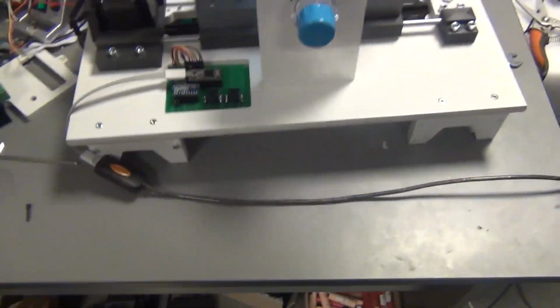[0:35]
Hey guys, a quick update on the ventilator project that I'm working on with my colleague Mihai. We made quite some progress and we managed to make this system more stable, and I will show you what I did, and I also uploaded the files on GitHub. We changed a few things on the hardware side and on the software. And yeah, let me show you what we did.
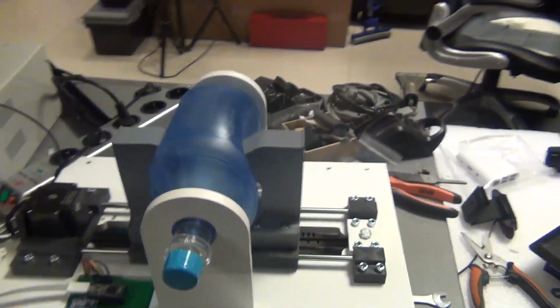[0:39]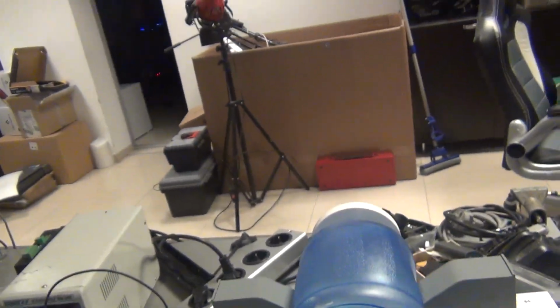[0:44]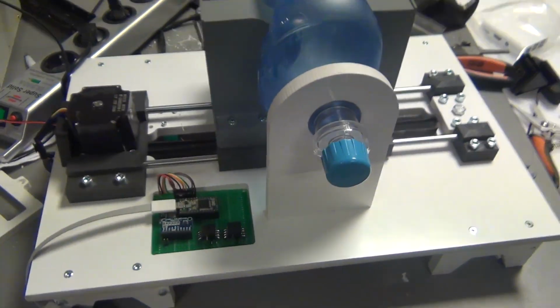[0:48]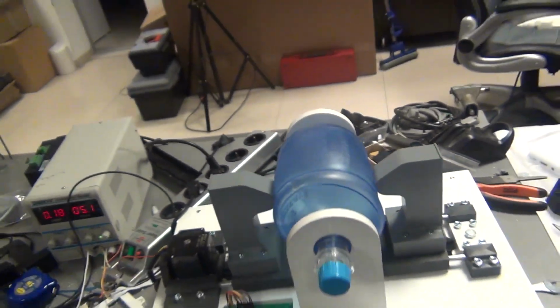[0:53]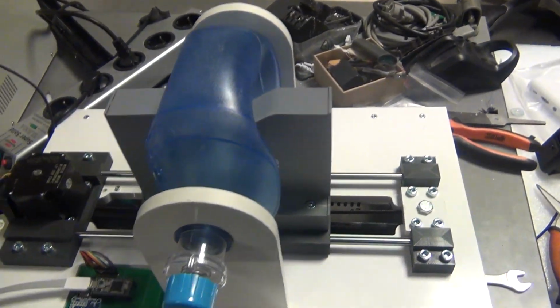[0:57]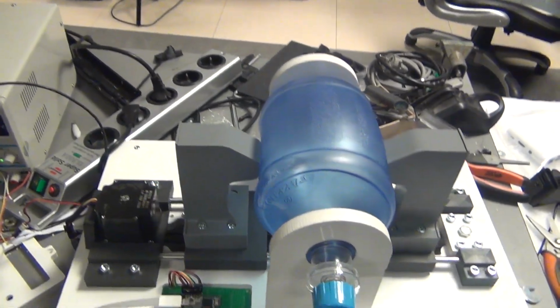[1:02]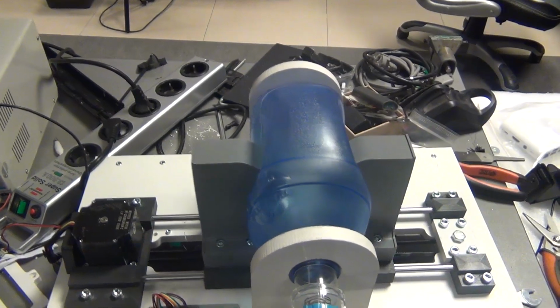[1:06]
So after posting the project, I got some requests that we should make the hardware two-part control. So we have the controller, and then we'll have an API, similar to what we did in a different project, having it controlled by API. And no matter what happens with the user interface, the machine should still go on.
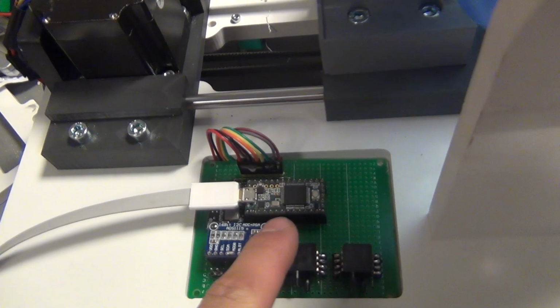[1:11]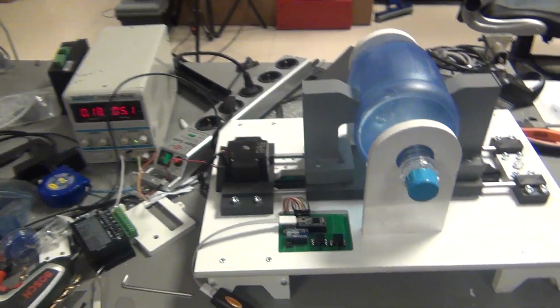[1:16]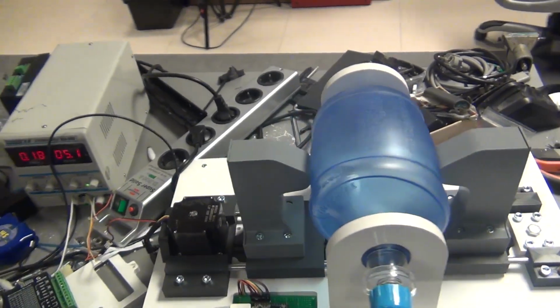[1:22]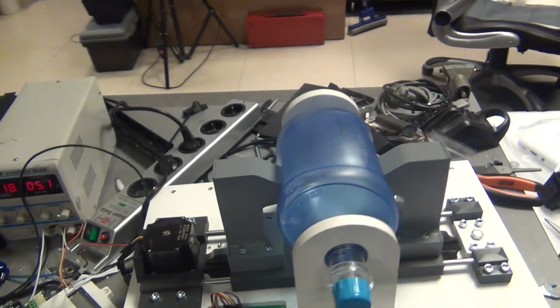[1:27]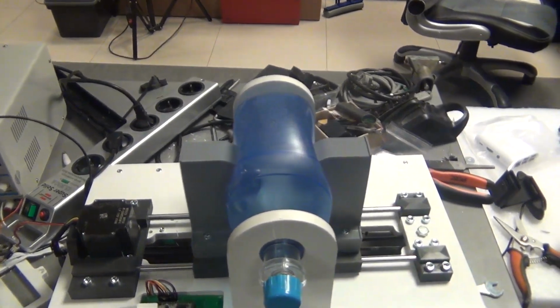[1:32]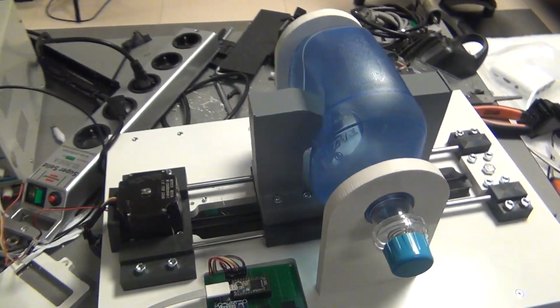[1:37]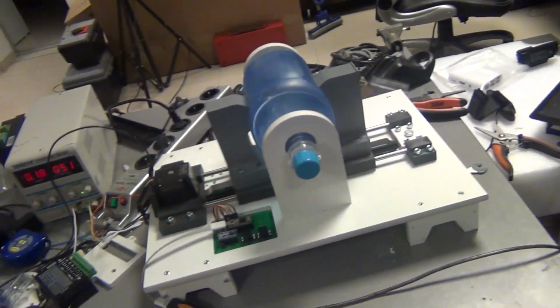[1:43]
So we changed from the Arduino Nano to a Teensy 3.2 board. It's a bit more expensive, but it feels more trustworthy. The processing speed is also much higher, and it can control the stepper motors a lot more precisely. I think Arduino will do fine for this kind of project when you do it yourself at home and stuff like that. But in case it is going to be produced in any country, you will want a better IC.
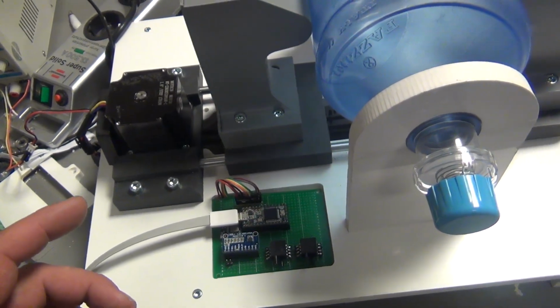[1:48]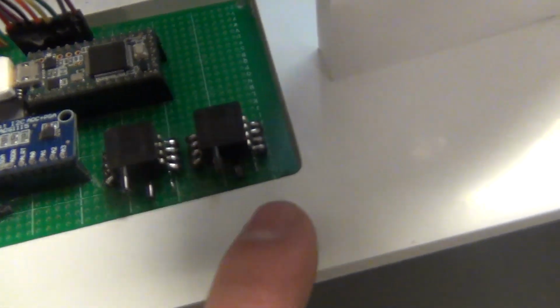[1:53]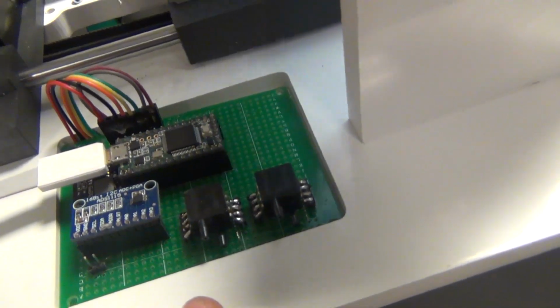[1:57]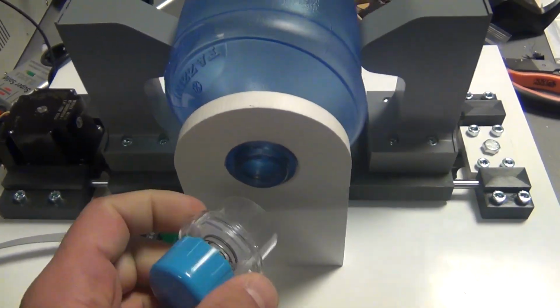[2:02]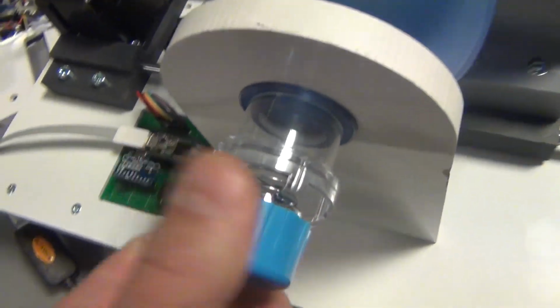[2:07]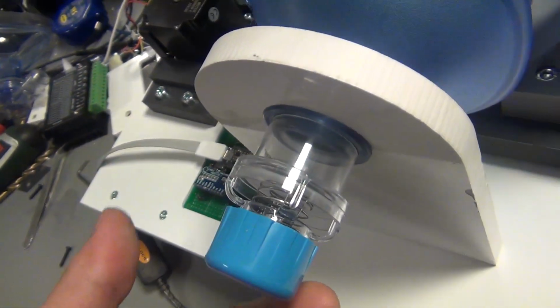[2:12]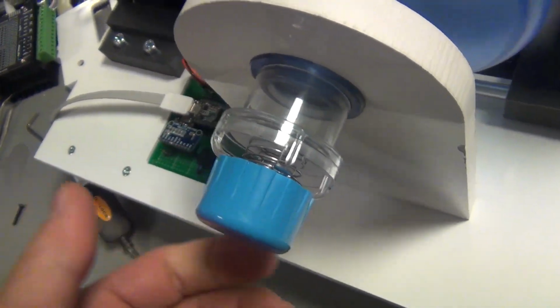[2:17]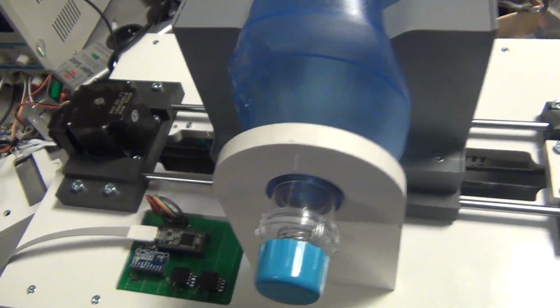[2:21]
So additionally to the board, we also added the pressure sensors. Those will be connected to the output. I'm using this PEEP valve to test that it can push the pressure. It has a maximum setting of 20 centimeters here, but I think it's going to be around 30 at this point, and it's pushing fine.
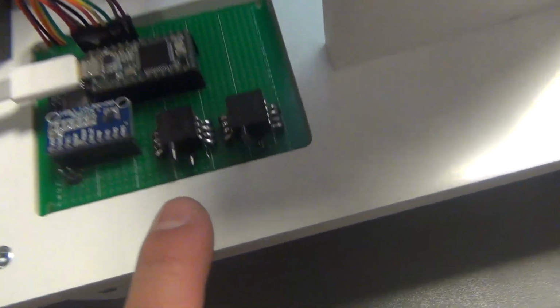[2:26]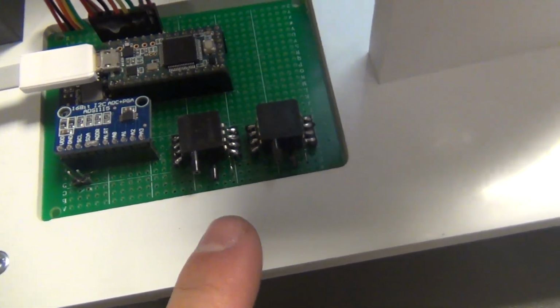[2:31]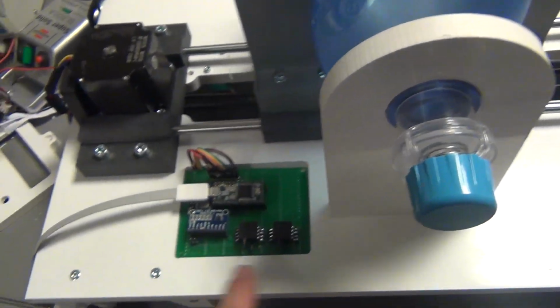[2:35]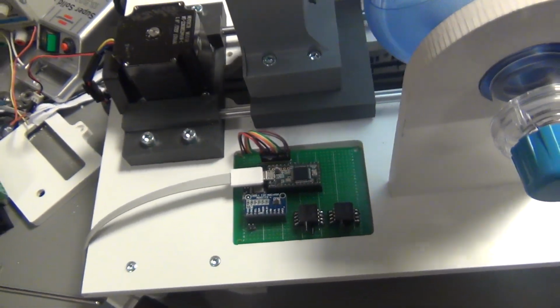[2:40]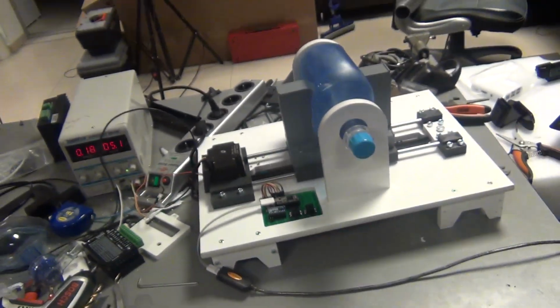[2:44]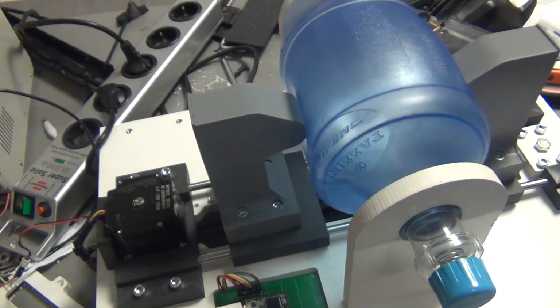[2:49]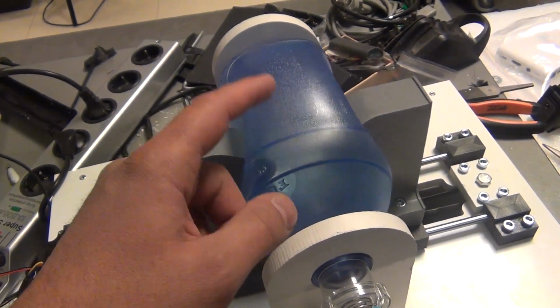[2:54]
So what we'll do with these two sensors, I'll add the details in the readme file on GitHub about which kind of sensors we used. We'll use a Venturi valve to measure the volume of air that's going through the output here, and we'll also be able to measure the pressure inside this chamber here.
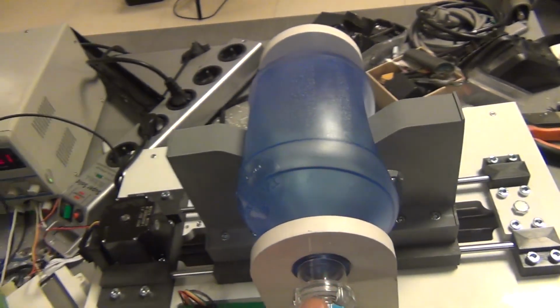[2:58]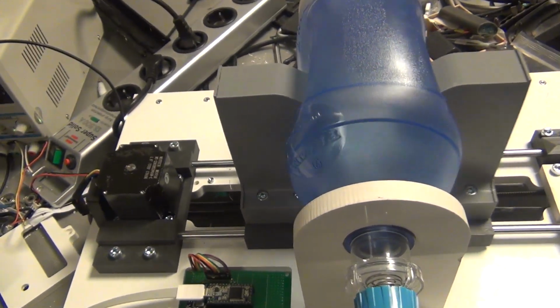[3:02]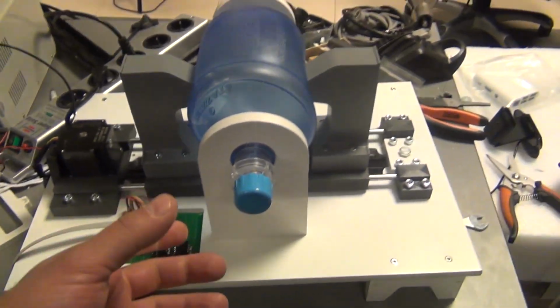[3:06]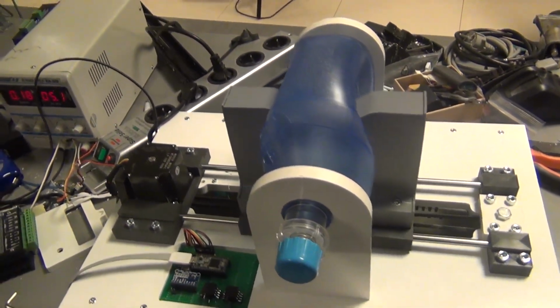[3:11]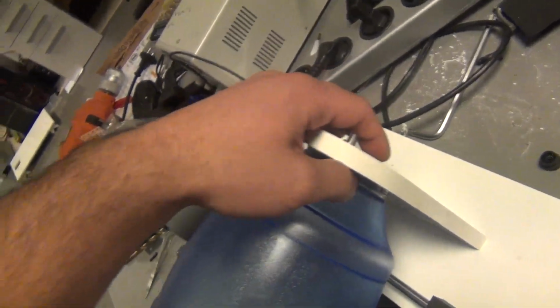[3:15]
So right now I'm printing the Venturi valve. Tomorrow I should have it as well. After that we'll connect some hose with the mask and have the oxygen mixing as well. It will be on the back here.
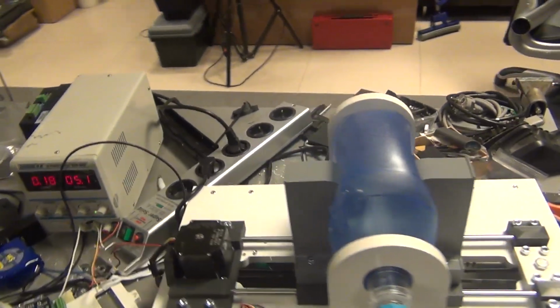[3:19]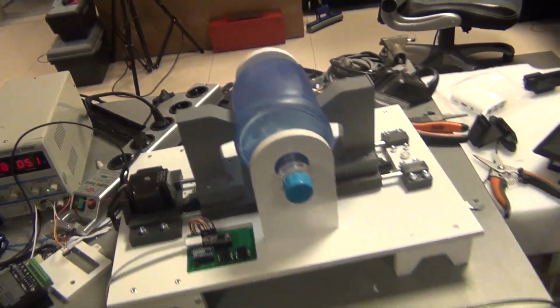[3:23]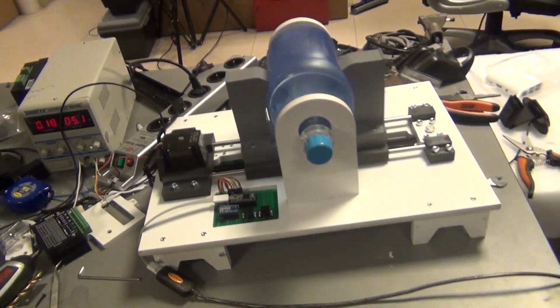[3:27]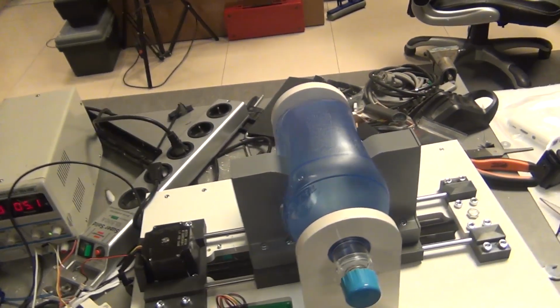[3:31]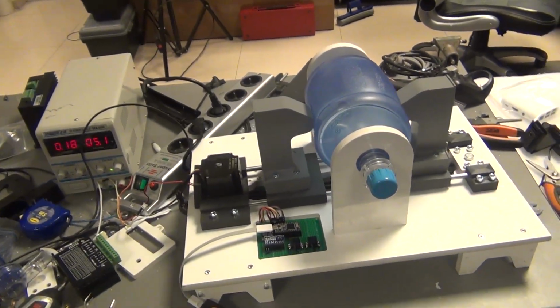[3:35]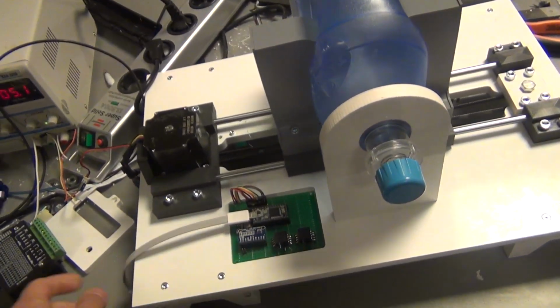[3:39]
This Ambu bag comes with an expansion bag where the oxygen will sit. It's not going to be your emergency breathing machine that you have in the hospitals, but the purpose of this project is to supply the need of this kind of machines. So let me disconnect this for a second.
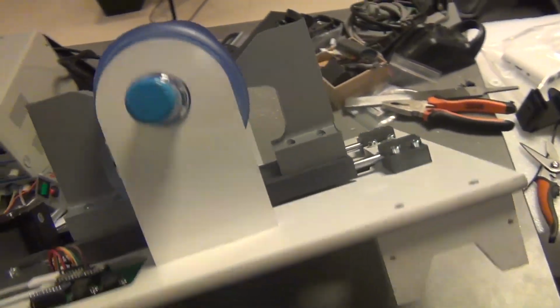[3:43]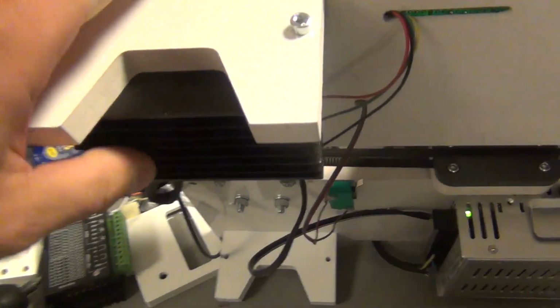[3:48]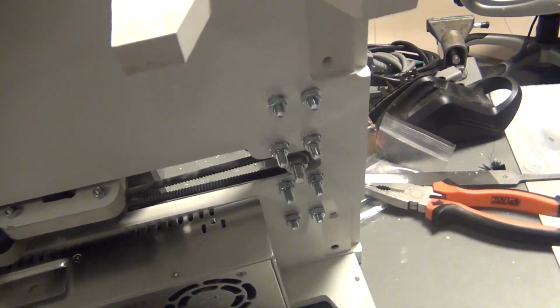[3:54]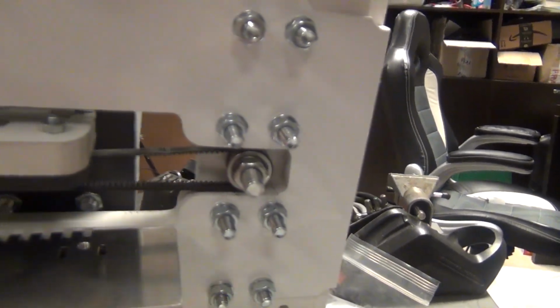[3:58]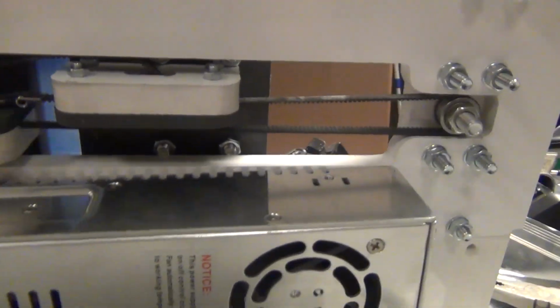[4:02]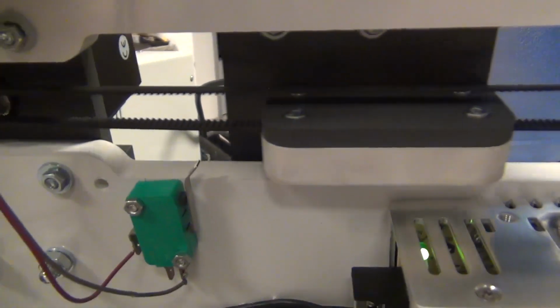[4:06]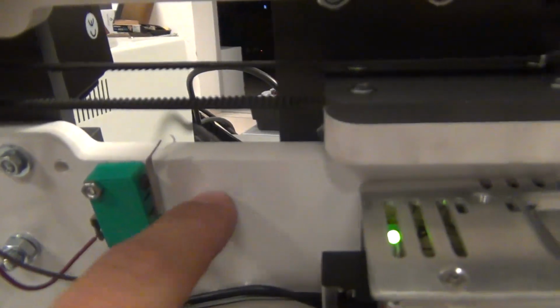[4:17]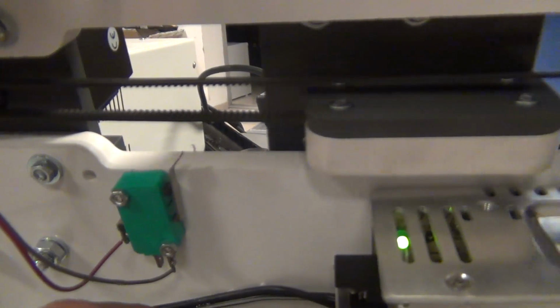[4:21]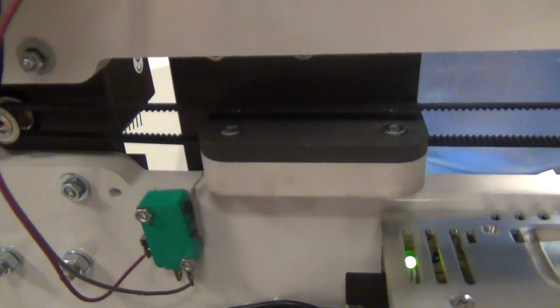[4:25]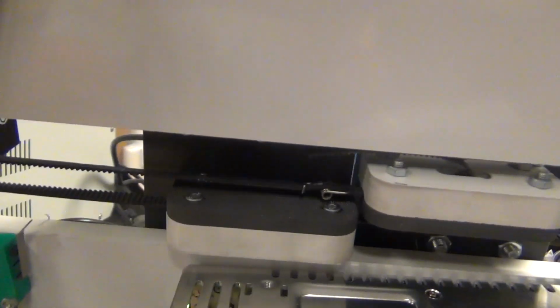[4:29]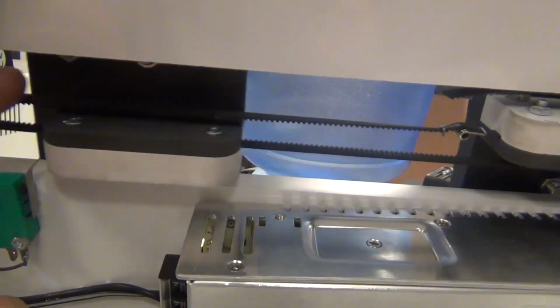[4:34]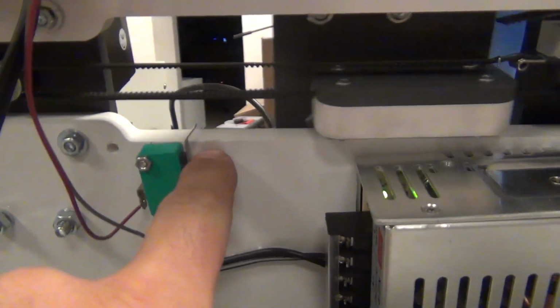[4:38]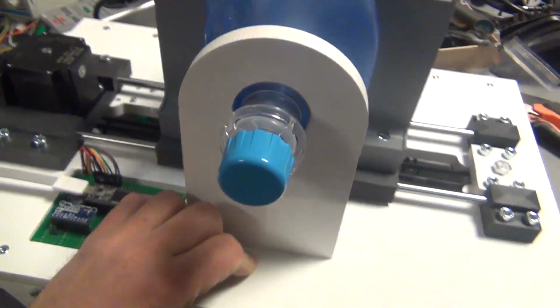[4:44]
We also chose a different driver, one that's more compact and better suited for this project. I changed the way that the belt is being tensioned, added a small tensioner here, and I also added the limit switch right here, so it's close to the working area. Before I had some dead movement happening, and in case you click on this, it's going to home to get this position, and then it will return with the settings that it had saved. So in case the belt moves and it loses some steps, when it's going back, it's going to hit the switch, home itself again, and go on.
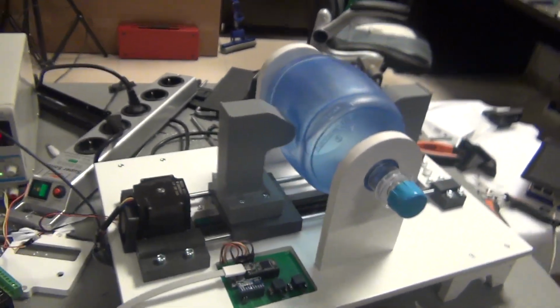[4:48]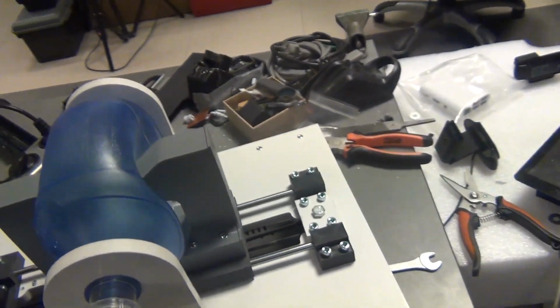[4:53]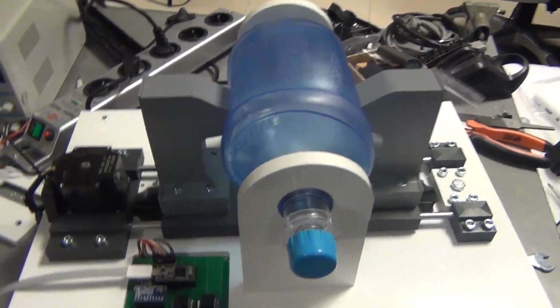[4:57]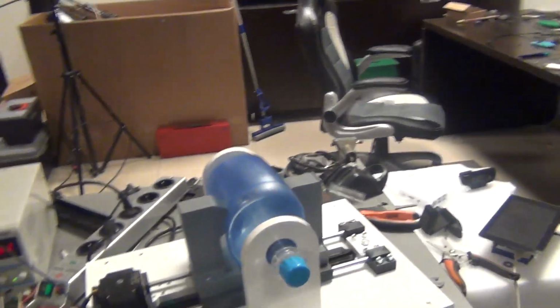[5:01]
I know it's not 100% precise with the belt and stuff, but this is the easiest way I found to make this movement work properly and have it working with parts from regular 3D printers and stuff like that. So let me show you what control we have so far. I'll put the camera down for a sec.
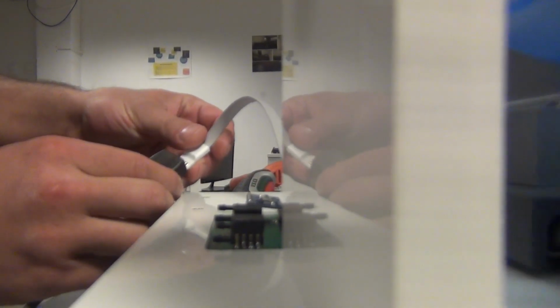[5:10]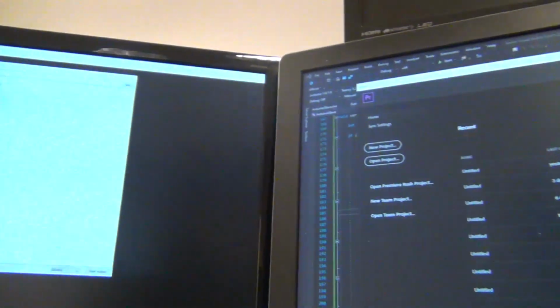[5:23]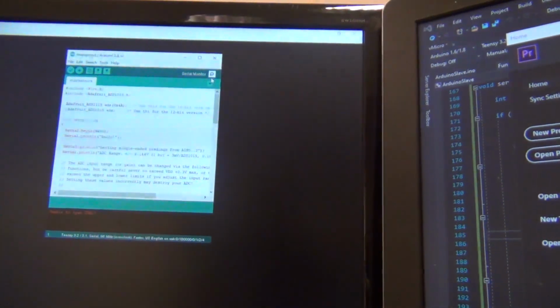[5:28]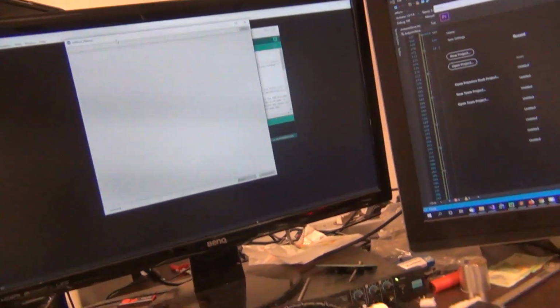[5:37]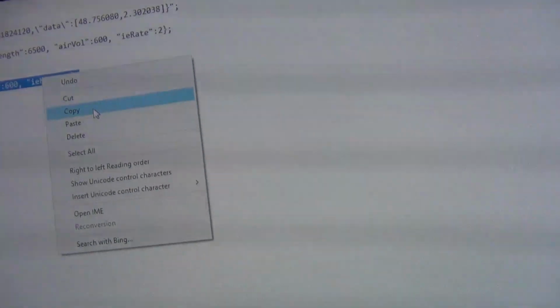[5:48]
Alright, so let me open a console here. That was because I had it connected and disconnected from serial. Okay, so this is the API that I actually have at the moment. You control these two parameters.
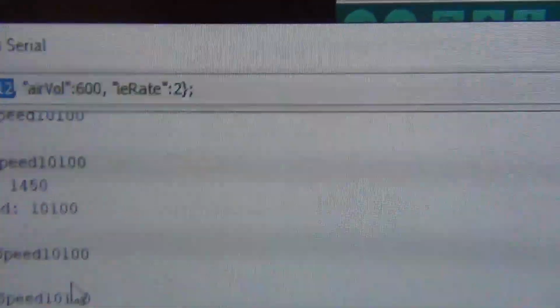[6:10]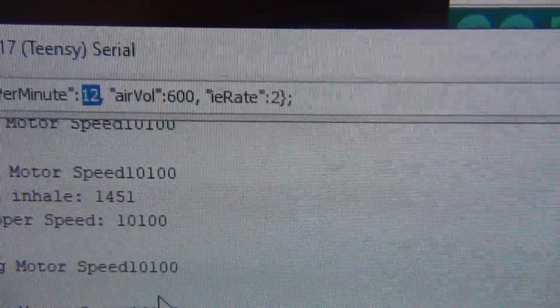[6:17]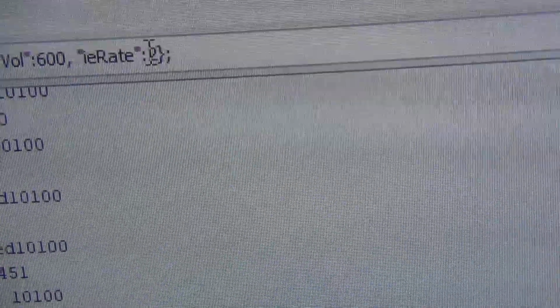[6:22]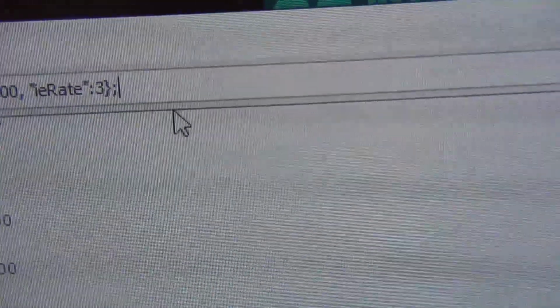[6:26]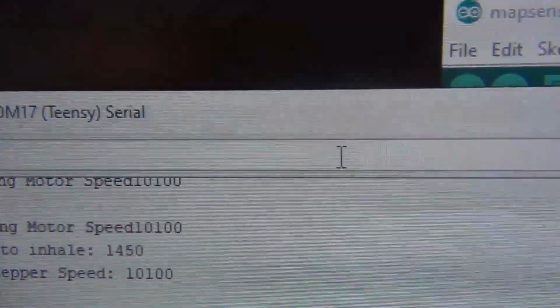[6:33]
Before I had it some weird way for testing stuff in percentage, and people complained that doctors don't use percentages, and they were right. So I made it look like what the doctor would use. So if you want 20 breaths per minute and you want the inhale-exhale rate. And I also explained what that means because I saw others working on controllers and they got it wrong.
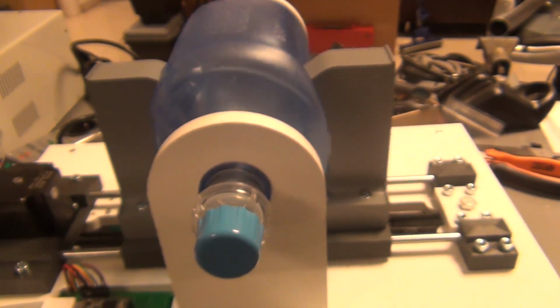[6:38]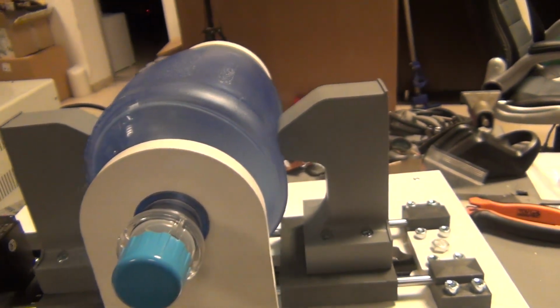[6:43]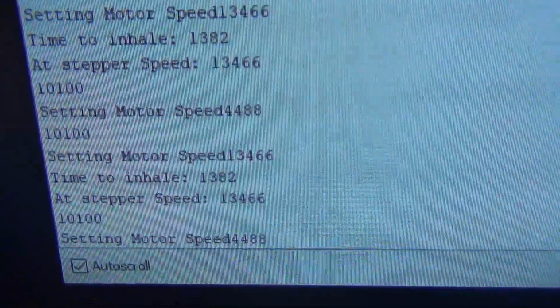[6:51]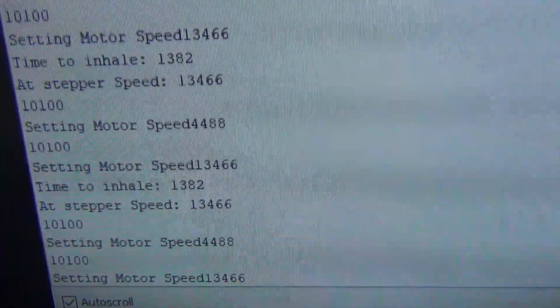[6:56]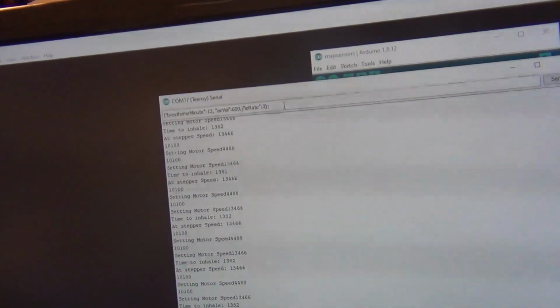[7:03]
So this is how it looks. And I'm printing the times to check the motor speeds for inhale and exhale. So, let's see. Let's go crazy, like 30 breaths per minute.
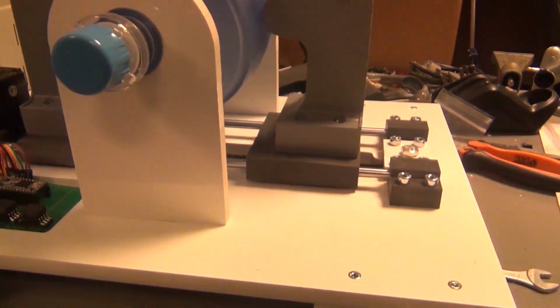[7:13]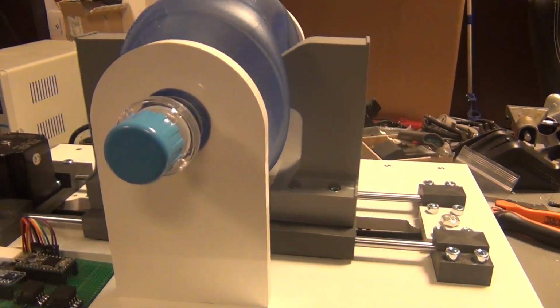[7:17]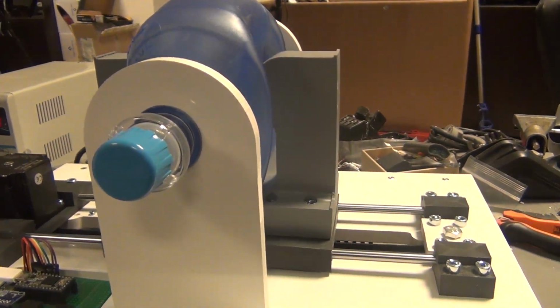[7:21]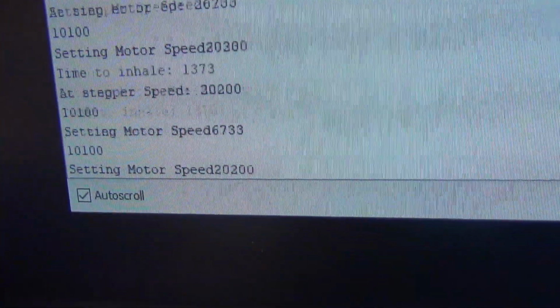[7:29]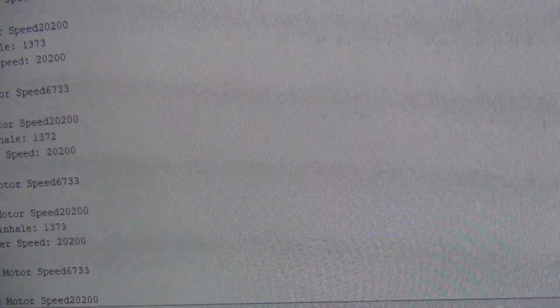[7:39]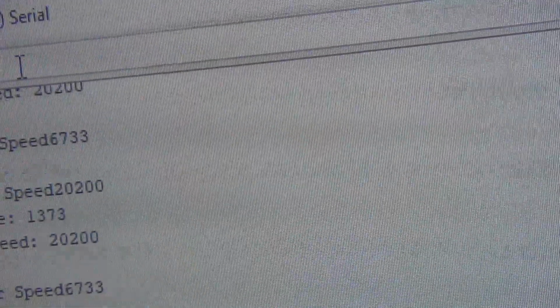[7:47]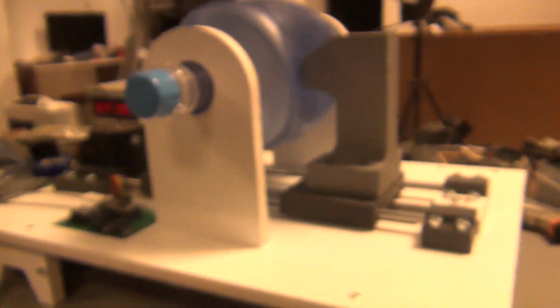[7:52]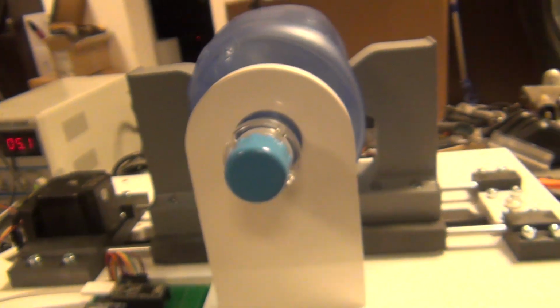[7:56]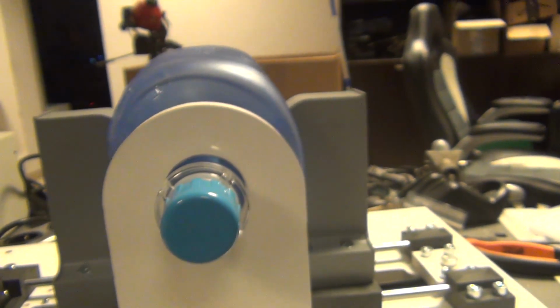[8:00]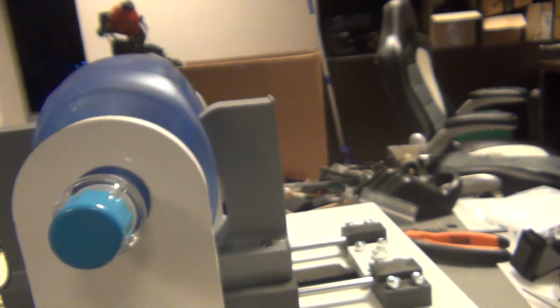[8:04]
So let's get something that's more likely to be used, like 15. So, like I was saying, the inhale and exhale rate means how much time it has to push the air into the lungs and how much time to exhale it.
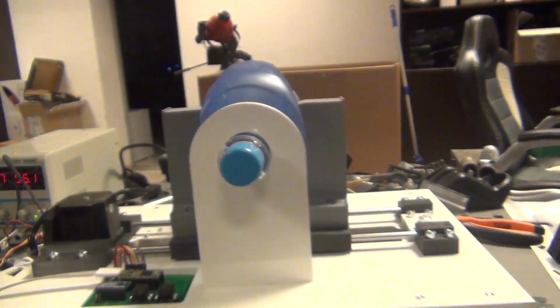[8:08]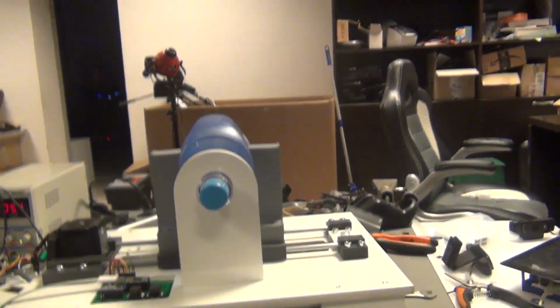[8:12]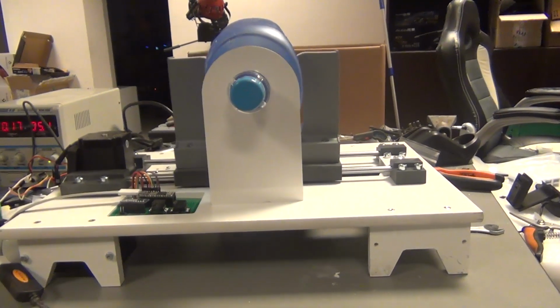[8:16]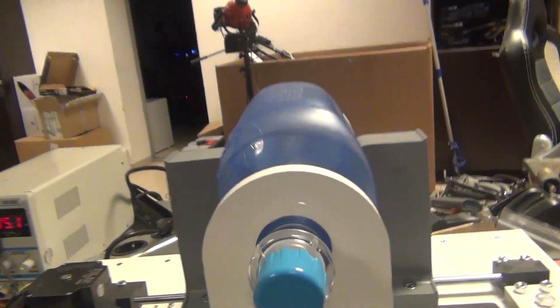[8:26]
So, for example, if you have 12 breaths per minute, that means you have one cycle for each 5 seconds. And in case you have a one-to-one inhale and exhale rate, you will have half the time inhaling and half the time exhaling.
When you have a ratio set to 1 and 2, you have to divide the total time, so you'll divide 5 seconds, let's take 6 because it's easier to calculate. You'll divide 6 seconds by 3, and then you have 2 seconds to inhale and 4 seconds to exhale. You do the same thing for a 1 and 3 ratio. You divide it by 4, and then you will have 25% of the time inhaling and the other 75% exhaling.
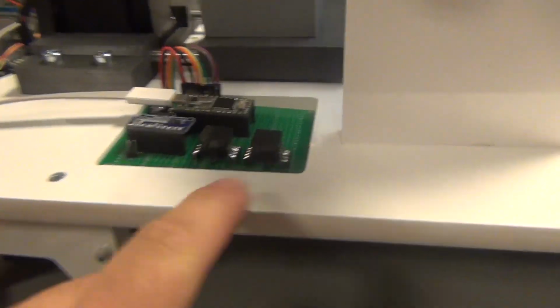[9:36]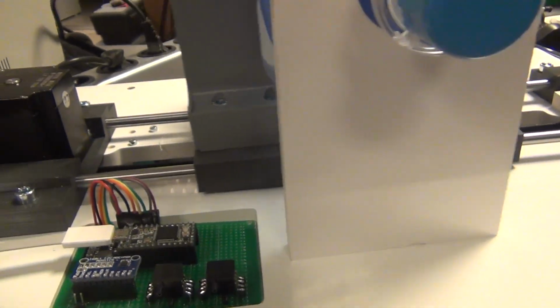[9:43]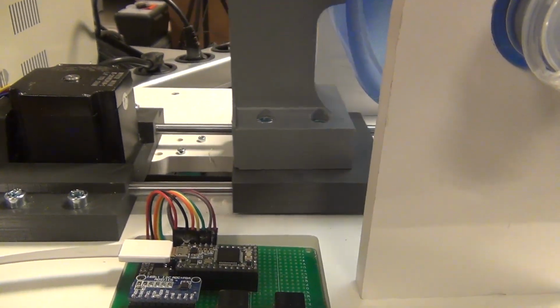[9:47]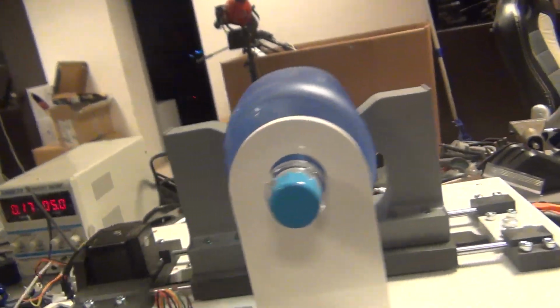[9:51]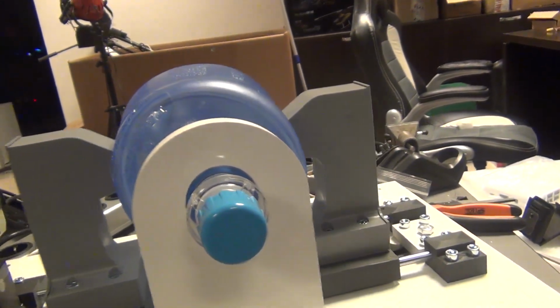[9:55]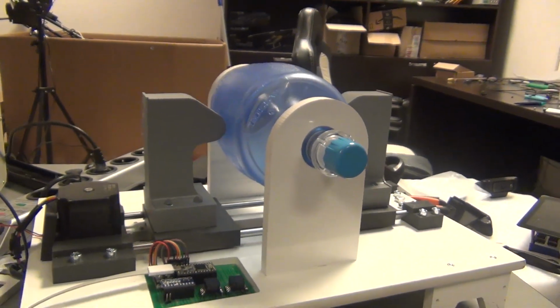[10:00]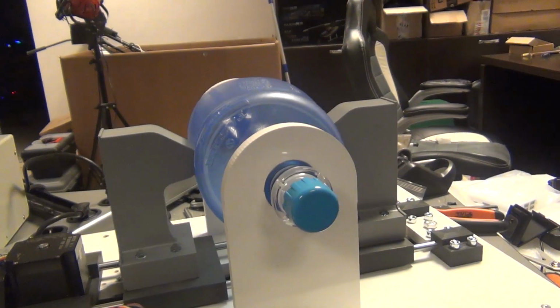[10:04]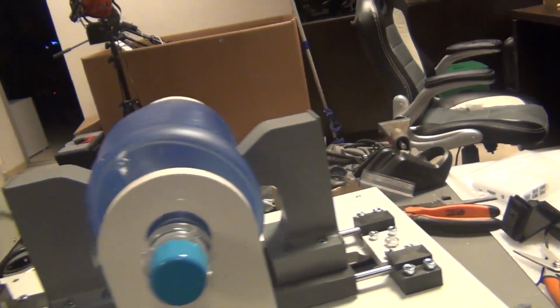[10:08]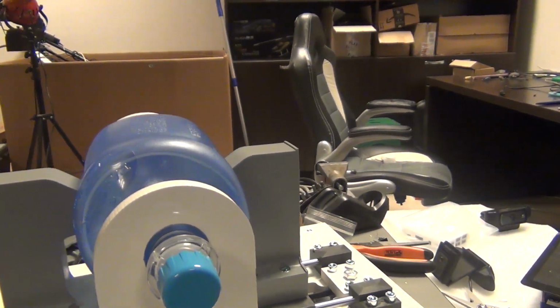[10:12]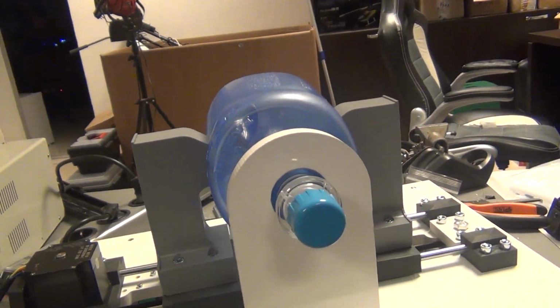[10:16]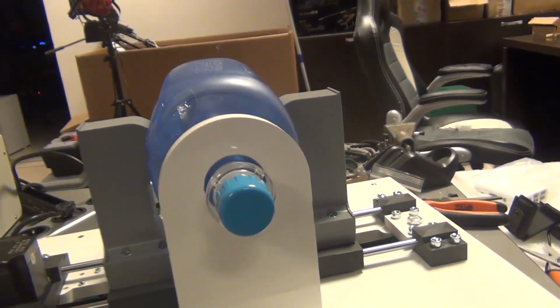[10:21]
I checked a few videos on how mechanical ventilators work, and they explained all the settings and the modes that it should work in. And after we put these pressure sensors here, we'll get access to more advanced algorithms to support breathing, so when the user tries to inhale it can trigger the machine. It's going to get more advanced, but I hope if this is going to be useful for people, we'll get some more advanced programmers joining and implementing these algorithms, or finding a way to get access to some source code from other machines, so we don't have to test the algorithms and stuff like that.
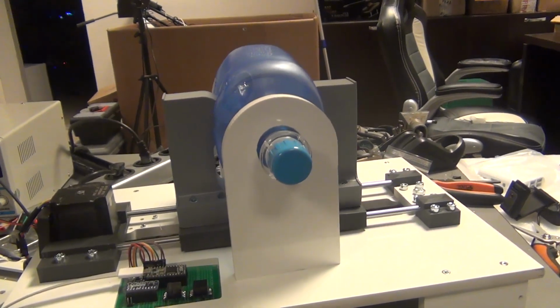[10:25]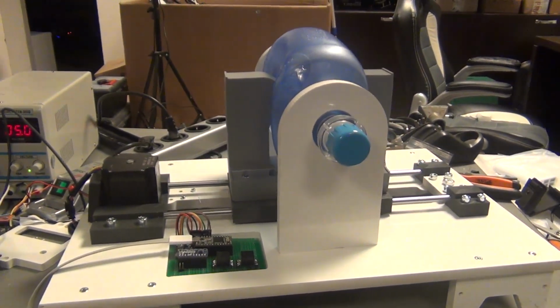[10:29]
They are already in the machines that exist, so that's another option. If you know some open source project that's similar to this, we could get some of these algorithms, replace the values there, and see that they work. They are proven. They have a lot of checks. For example, if you are set on supporting breathing, you still want to have a minimum number of breaths per minute in case the user doesn't try to breathe. You still push air into him to keep him alive.
So yeah, that's the status of the project at this point. Like I said, I made it already. I placed it on GitHub. I will push the new code with the Teensy board. This code should work on the Arduino as well. I did not change anything. It's still written in Arduino, which is the fastest way for me to develop. And once all the code is tested and it works as it should, it can be translated to C or C++ easily by a programmer that does that every day.
Because for me, it's going to be overkill to try to implement this and have the user interface going as well. That will be written in Python, and will send commands to the board. So thanks for watching, guys. I wish you all the best, and if you have any questions, don't hesitate to contact me. I'll try my best to make the files available in whichever format you can check.
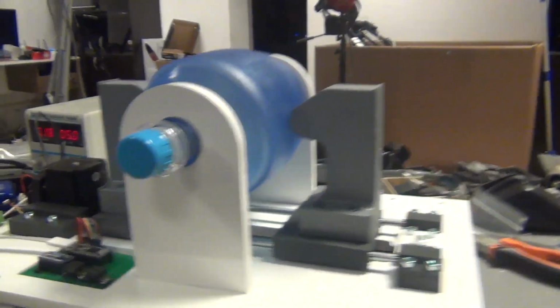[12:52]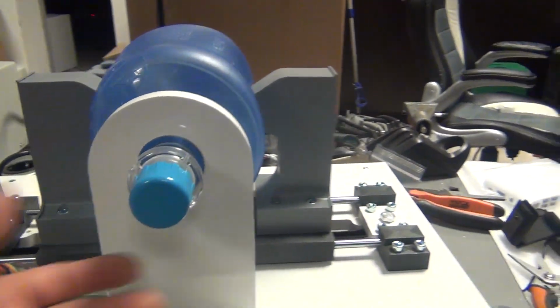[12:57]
Because I had a user from Pakistan saying that he could not open the files because the SolidWorks version that I'm using is 2019 and it's not backward compatible, so the files need to be opened with 2019 as well. But I added the STL files, and you have some renders there. Basically, you need to get this movement going. So what you will need is the ambu bag, which comes with this mask.
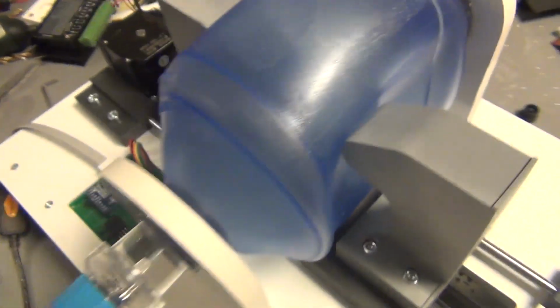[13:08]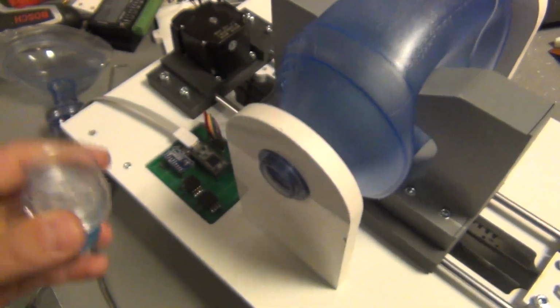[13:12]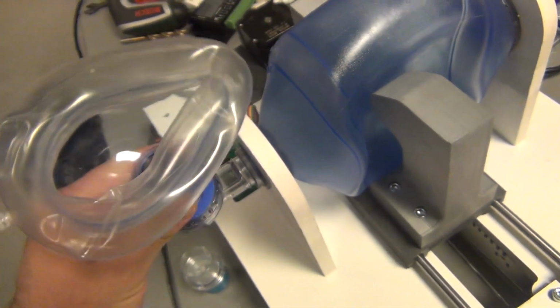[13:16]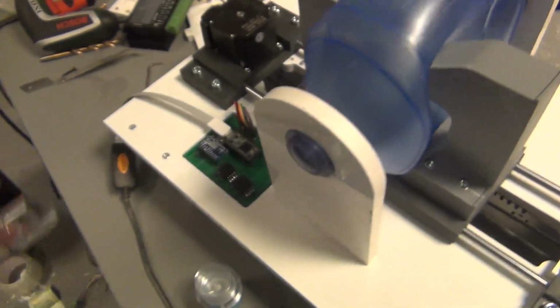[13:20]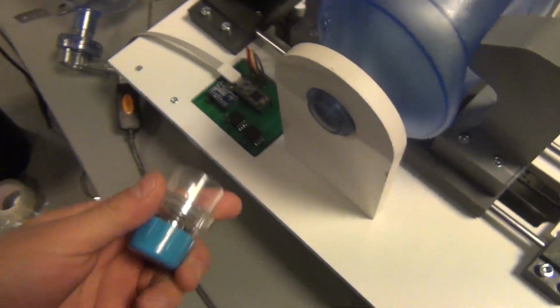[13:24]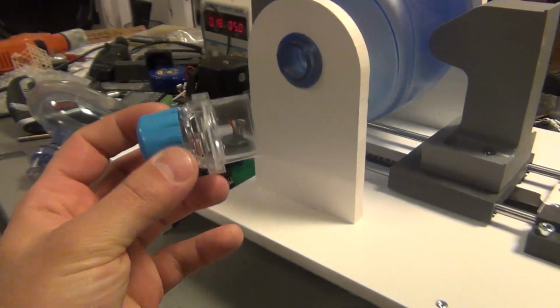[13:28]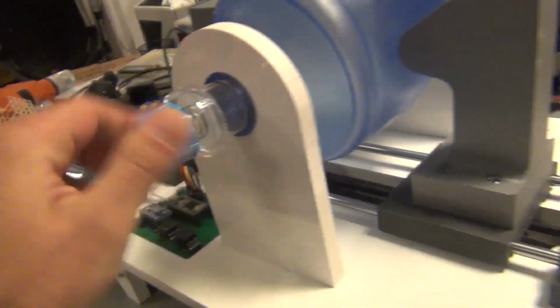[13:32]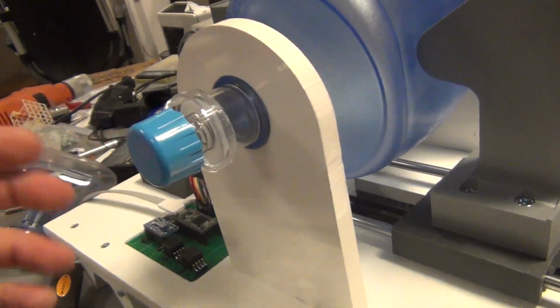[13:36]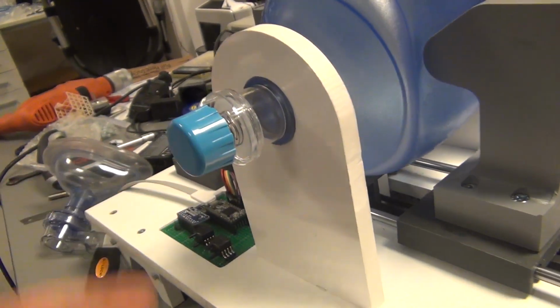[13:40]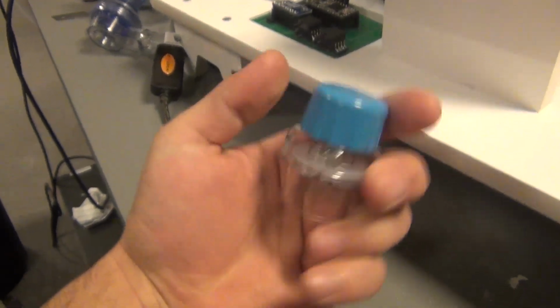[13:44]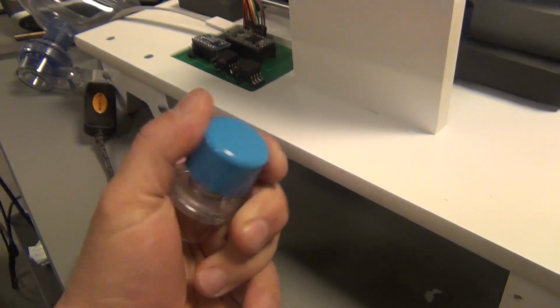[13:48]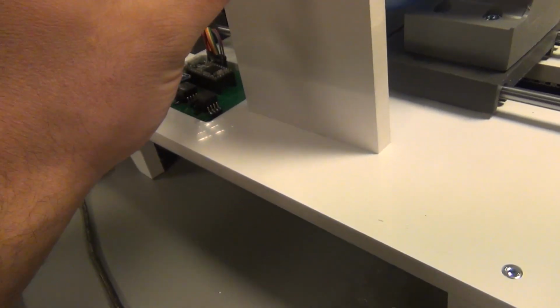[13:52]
The ambu bag is cool in that it has all the valves in place, so you don't have to engineer any valves or 3D print or anything like that. It comes like this by default, but you'll have to extend this, like put 1 meter of hose on this. And I purchased some of these PEEP valves because I understand that they are needed to treat patients with pneumonia, so it needs to have a positive pressure when exhaling. So that's what this is used for, to set a positive pressure on it.
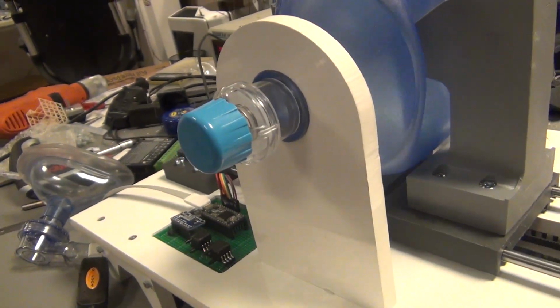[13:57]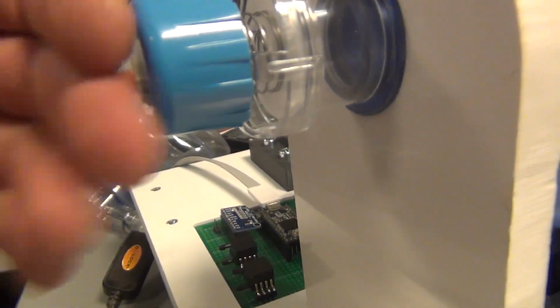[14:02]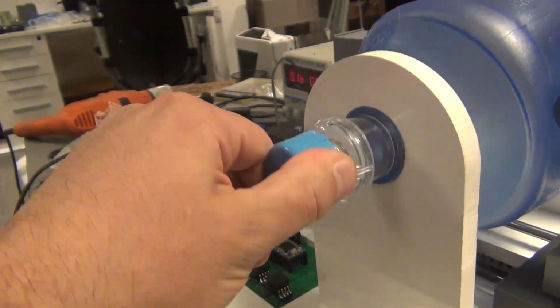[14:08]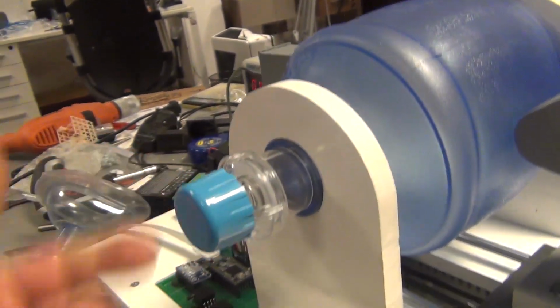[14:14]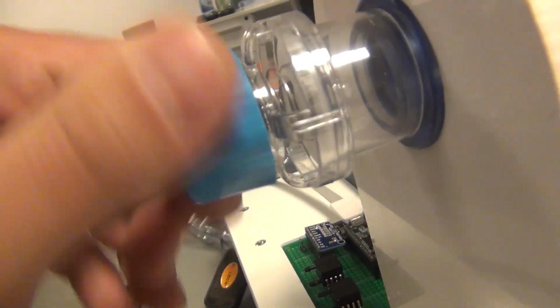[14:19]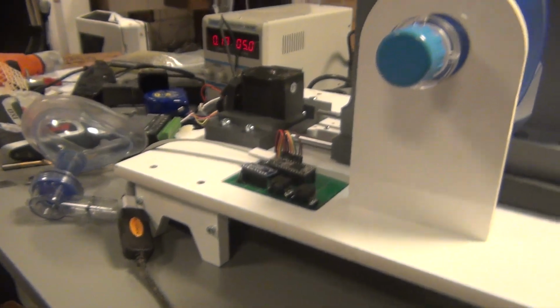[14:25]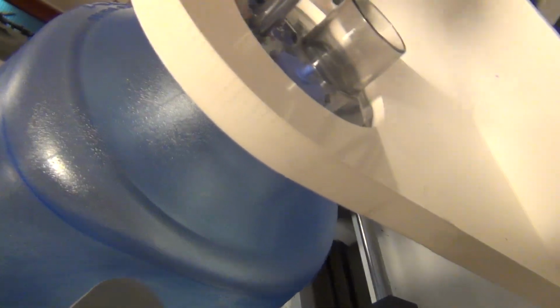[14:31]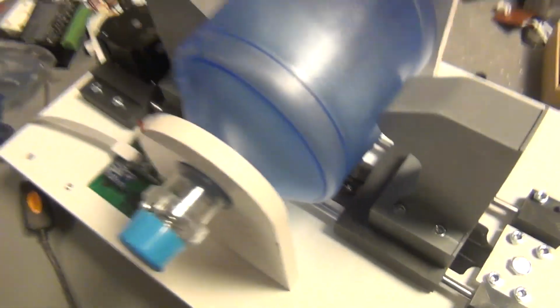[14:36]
But we'll also use this as a safety valve in case the airway is blocked. You don't want to push air, so we can make the spring harder in here, which increases the resistance. But at this point, I think it's just fine to be used as a safety valve when you go over the set max value here. So we see the spring is still going a couple of millimeters. So yeah, the oxygen goes here, so you have the port for oxygen. The bag will fill in the back. I don't have it here because it's accommodating.
And yeah, I will be posting more videos with the development of this project. If you have any ideas or you want to join that Git project that I did, and you want to add some checks, like do more checks on setting the speed or setting the values there.